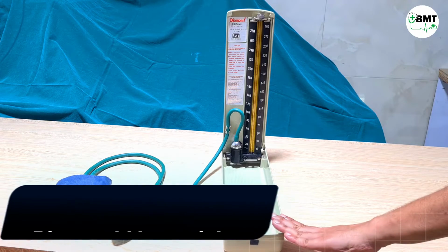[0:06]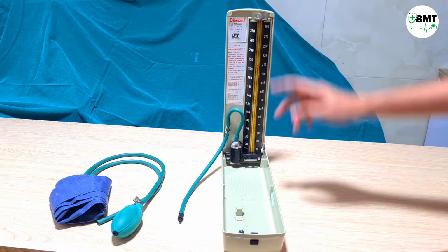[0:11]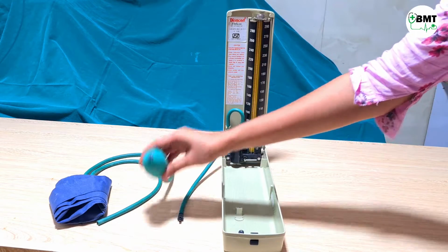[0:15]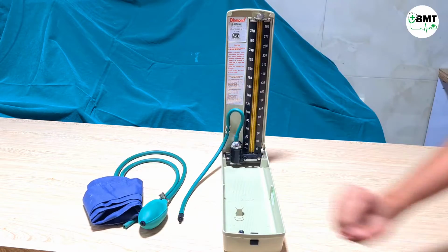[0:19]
This is a diamond BP apparatus which contains mercury. This is the frame. Then this is the tube, which contains mercury. This is the bulb. And this is the BP cuff, which contains a BP bladder.
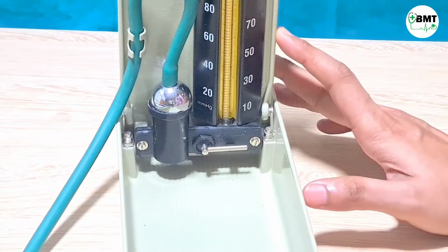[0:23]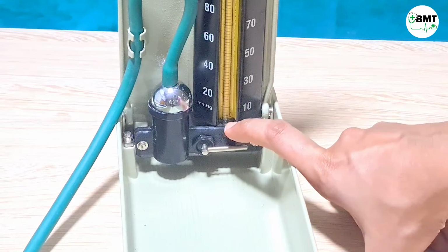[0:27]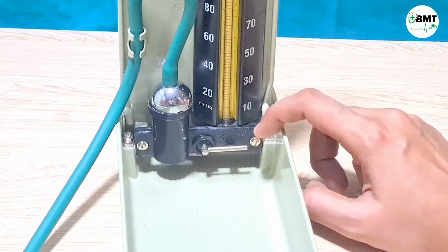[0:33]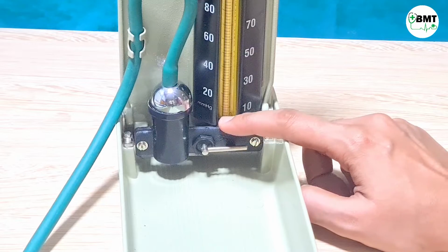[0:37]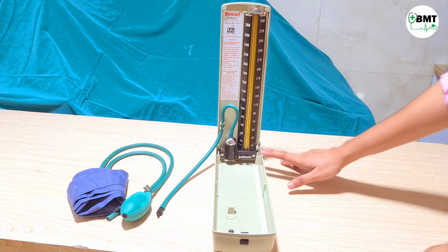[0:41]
Now how will we come to know whether this BP apparatus is calibrated or not? You can see the mercury over here. It should be on the zero point. Currently, you can see this is not on zero, which means this is not calibrated. So for that we have to fill mercury till zero. Now let us see the simplest method of calibrating this BP apparatus.
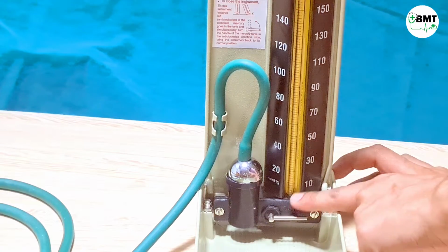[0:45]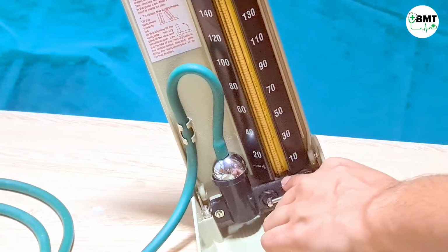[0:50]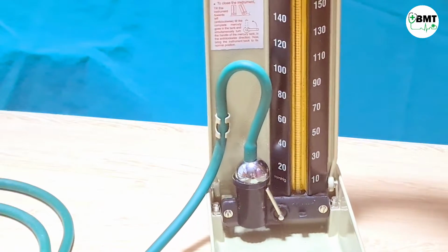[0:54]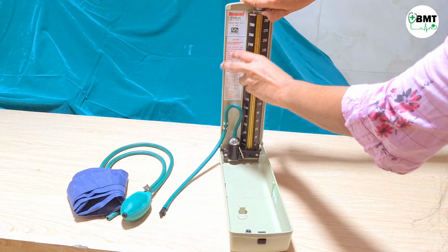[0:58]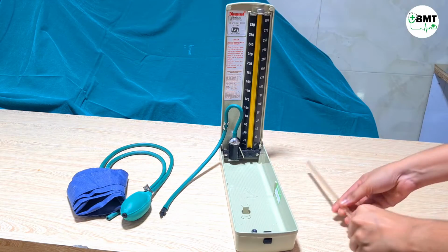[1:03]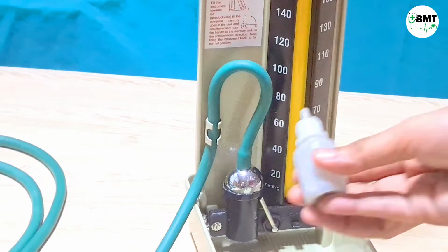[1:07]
First, as you can see, mercury over here. So tilt it, and you will not see mercury over here. Now lock this. The mercury has been locked. Now pull it up and remove the tube. Now take the mercury and fill it.
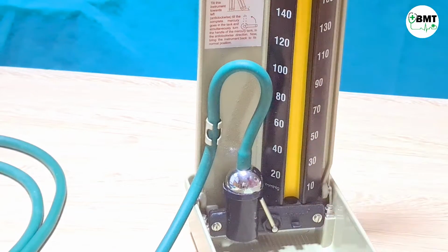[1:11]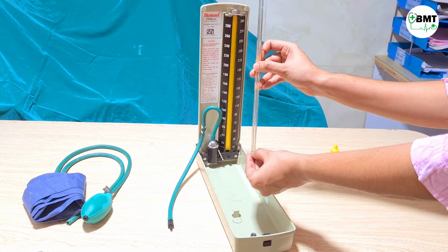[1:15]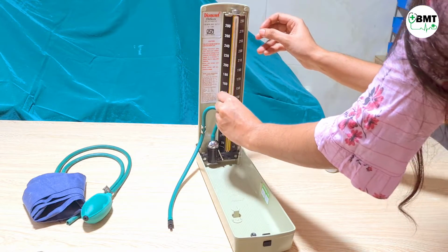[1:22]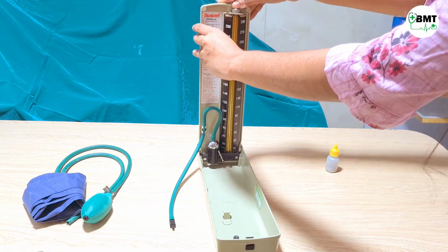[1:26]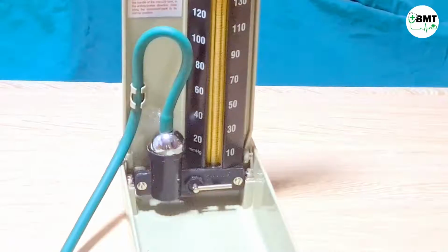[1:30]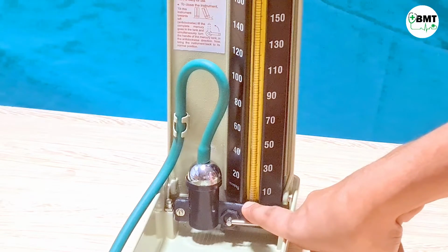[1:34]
Once filled, now place this tube and check whether it is reaching zero or not. While placing this, this number should be facing towards the front. Place it. Pull it up. Now once placed, open the lock and check. Now as you can see, this mercury has not reached zero.
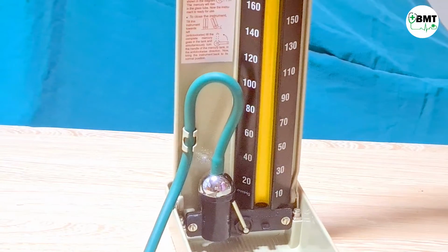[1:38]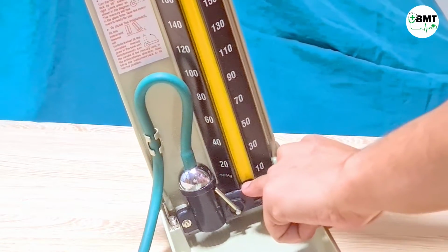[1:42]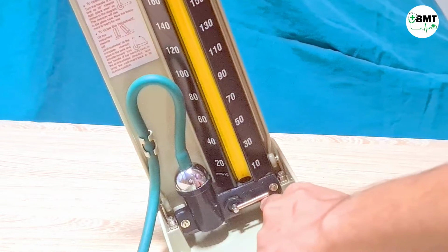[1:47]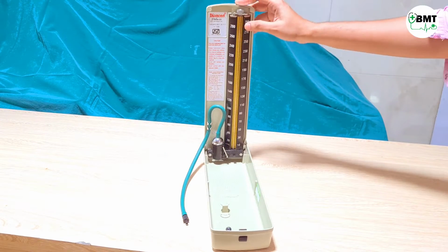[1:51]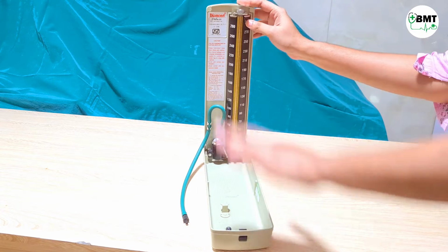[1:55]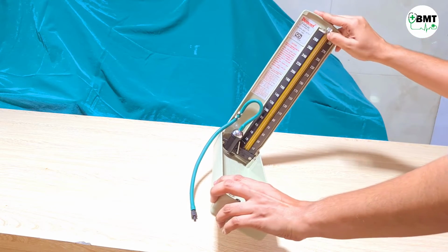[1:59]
So repeat the process. While filling mercury, one easy way is that you can tilt it and then fill over here. Unlock this, fill the mercury in tilt position and then again lock. Once you fix this tube, make sure that this is properly fixed in the slot. Otherwise, if this flap is closed or if this tube is facing downwards, then from here mercury spillage may happen.
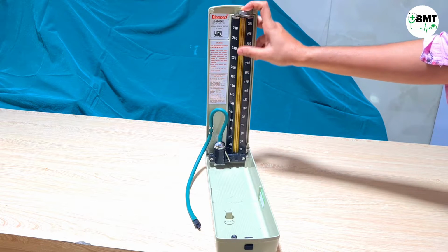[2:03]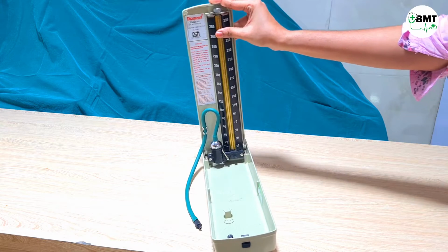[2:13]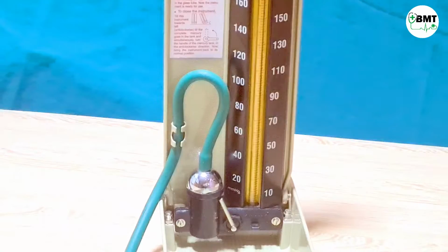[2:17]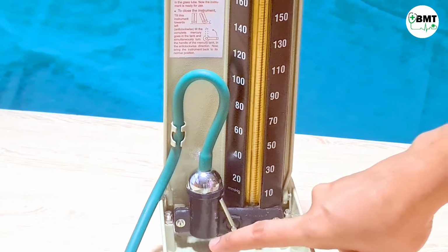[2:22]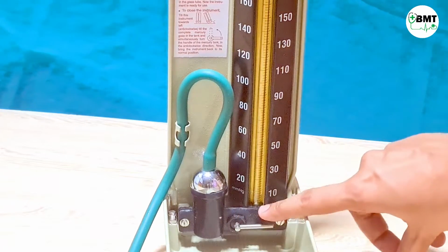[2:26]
If this tube is damaged or broken, then you can replace this tube as shown before, and this tube is easily available in the market as well. And make sure that whenever you replace this tube, you have to slightly tilt this and then lock it over here. Now let us check whether mercury has reached zero position or not. Let us unlock it. Now it is on zero. So this is calibrated.
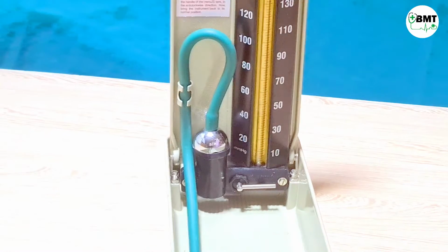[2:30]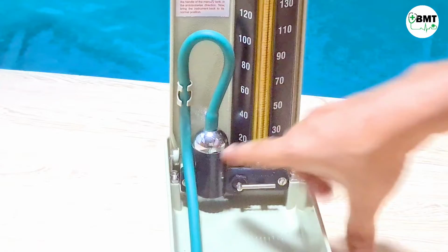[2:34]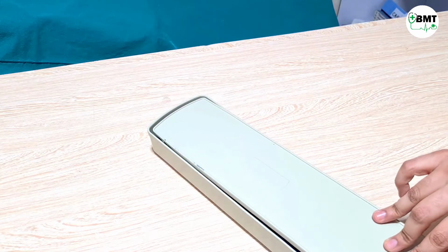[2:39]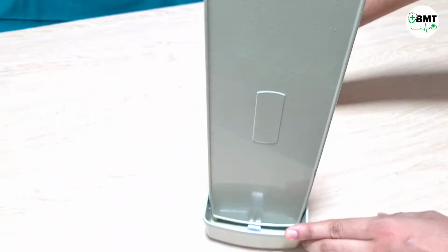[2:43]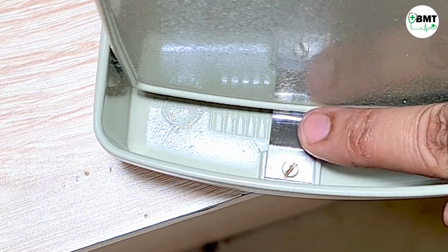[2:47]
If this hinge is broken, then it can be replaced. That part is easily available in the market. If this flap is not closing properly or fixing properly, then tighten this screw and make sure that this curve is facing upward.
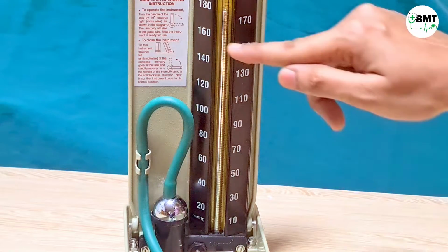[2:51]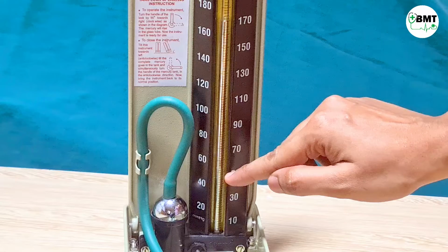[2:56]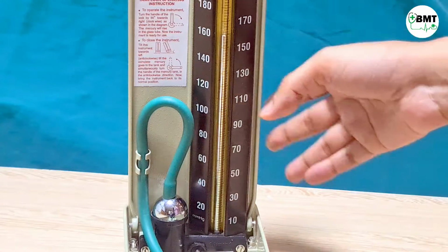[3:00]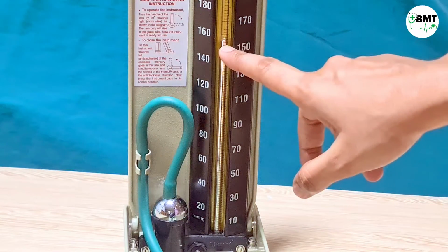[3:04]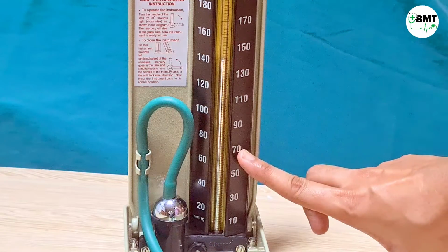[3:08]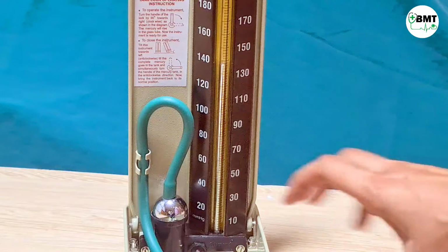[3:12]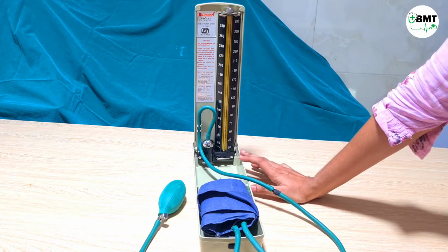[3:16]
In some cases, due to mercury spillage, you can see air gaps or air bubbles in the mercury. This is due to insufficient mercury in this apparatus. So in that case, you have to check whether this mercury is reaching zero or not. In that condition, you have to check whether it is at zero in the initial stage, before inflating the cuff.
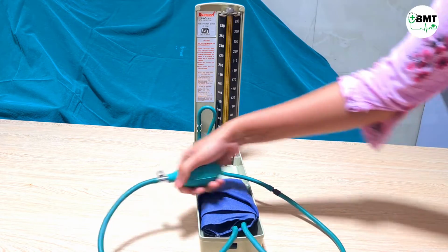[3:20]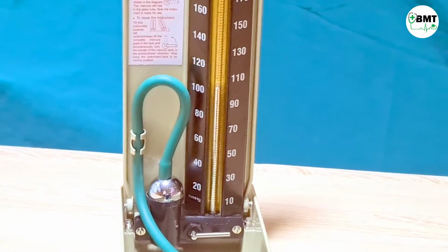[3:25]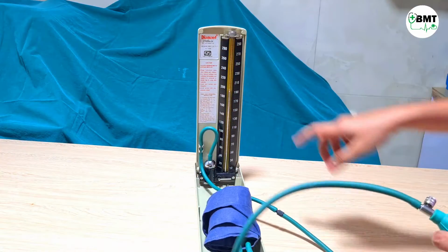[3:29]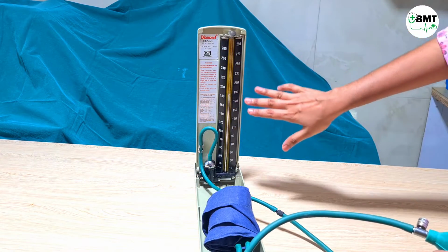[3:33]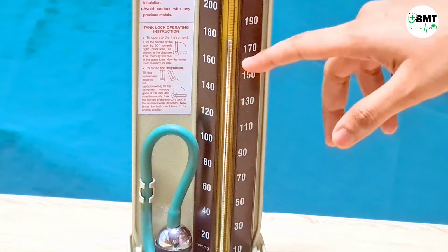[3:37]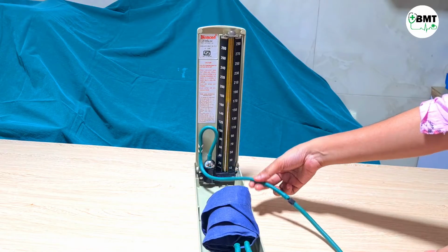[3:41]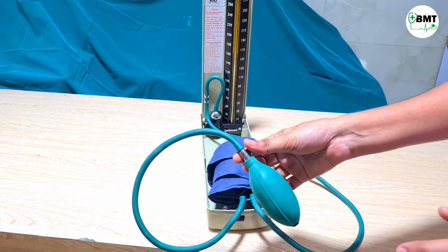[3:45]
Now let us see if the problem comes that mercury is not stable in one place. For example, I am inflating this. Now as you can see, mercury is coming down, but this is tolerable leakage. If it falls more speedily, then there is major leakage. The leakage can be here or in this bladder or in this valve, anywhere.
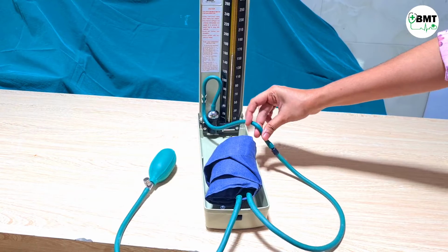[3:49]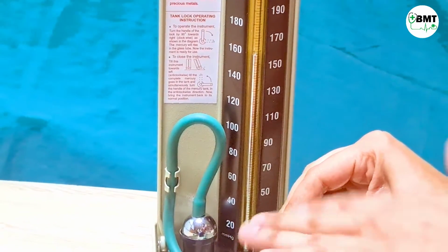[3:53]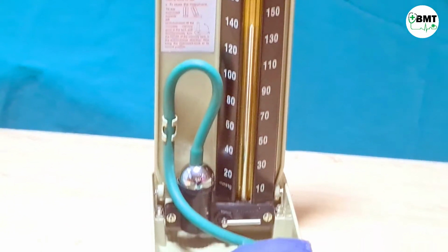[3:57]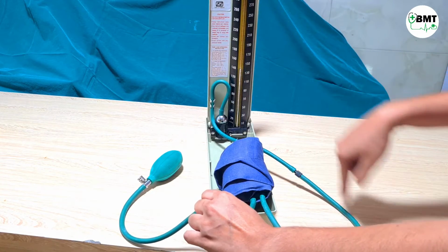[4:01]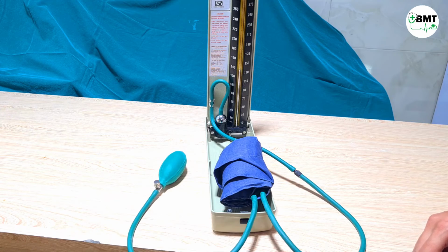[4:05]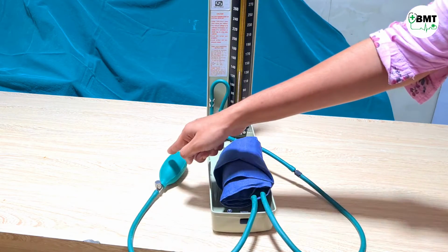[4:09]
So how to check it? First, pinch it over here. Now this is stable. This means there is no issue from this point to this point. Now pinch it over here. Now it is stable, which means there is no issue till here. Now if you remove, you can see that minor leakage is there, because of which it is coming down.
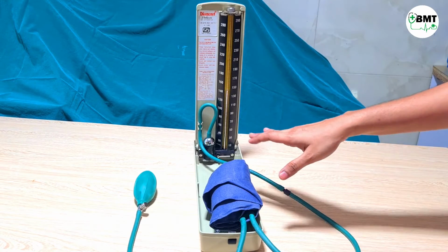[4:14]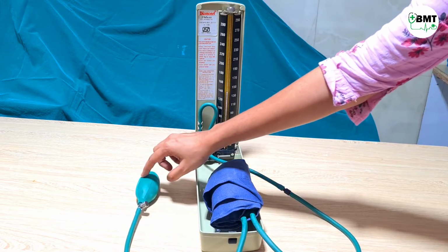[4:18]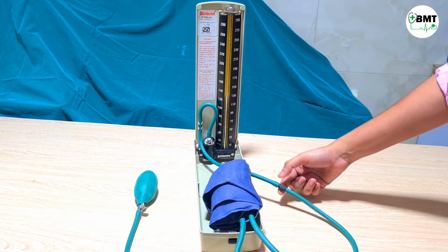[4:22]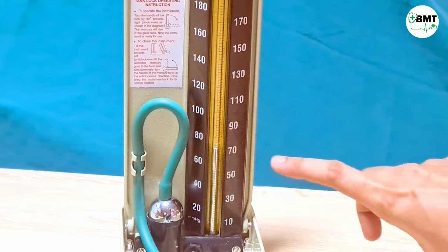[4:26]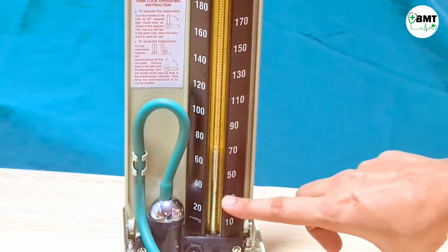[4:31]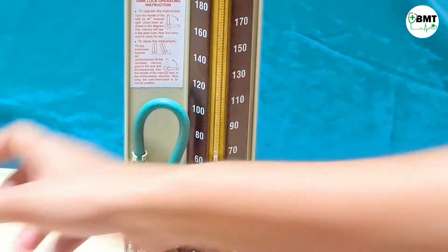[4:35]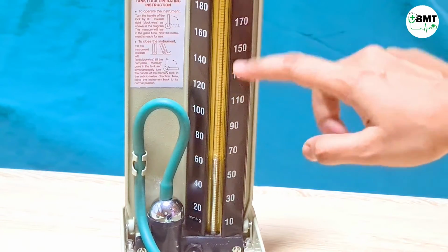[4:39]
So accordingly, whichever part is faulty, for example bladder, valve or bulb, everything is available in the market, so you can replace it. Also these connectors are available in the market. Sometimes one more issue comes like this: you can see this mercury is without air bubbles. Whenever you inflate this with the bulb, there will be air gaps in between the mercury. That is because there is insufficient mercury in the apparatus.